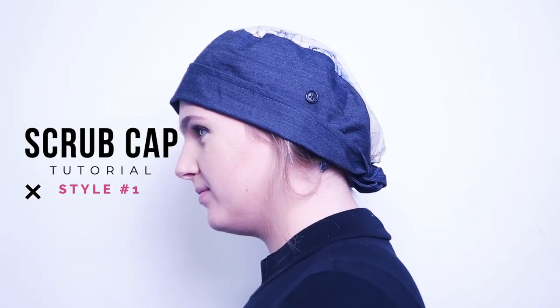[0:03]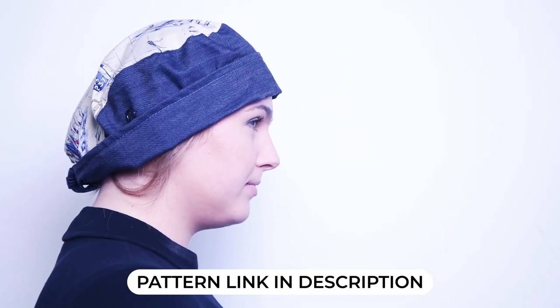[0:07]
Welcome back, everyone. Today we're going to be showing you how to make a super simple tie-back scrub cap with ear-saving buttons to loop your mask around, and the pattern is available in the description.
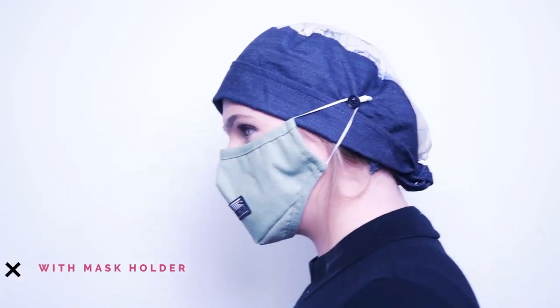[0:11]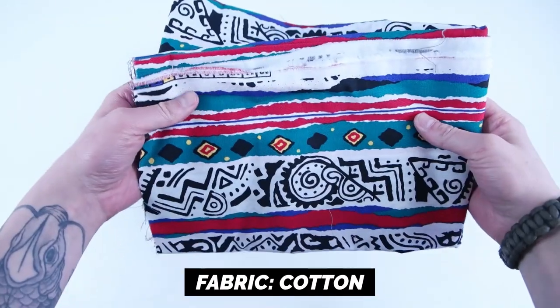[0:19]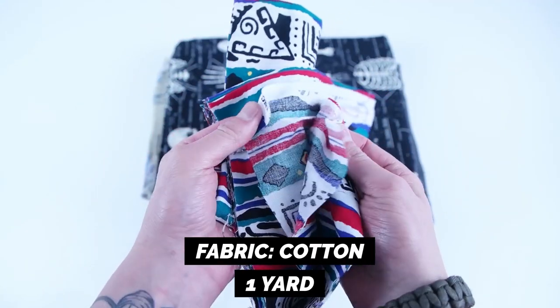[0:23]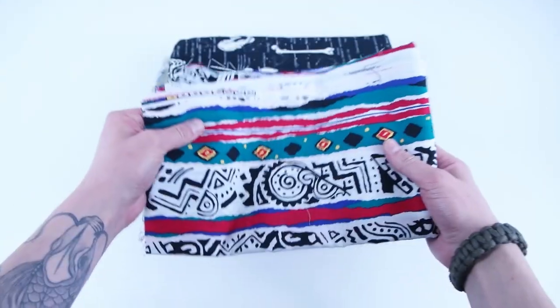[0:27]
Getting started with supplies, you want 1 yard of cotton. You can get away with less than 1 yard, but I recommend grabbing more in case you make a mistake. Cotton comes in so many different patterns. It's super durable, easy to clean, and lightweight.
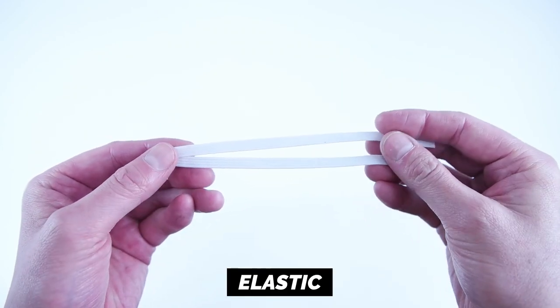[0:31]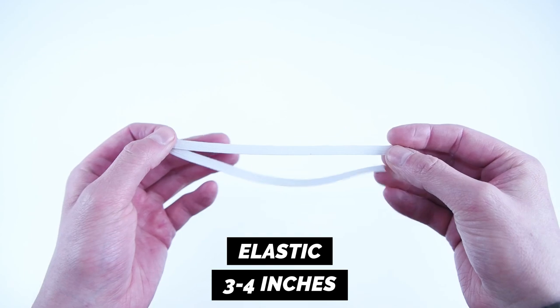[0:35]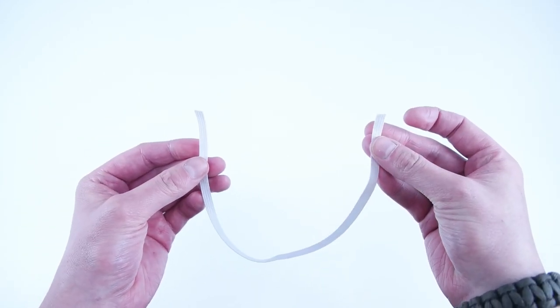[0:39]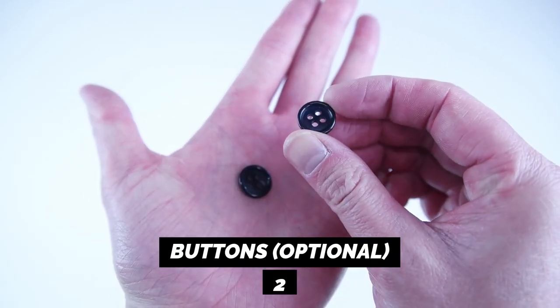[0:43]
You'll need 3 to 4 inches of elastic. I recommend using 1/4 inch elastic, but if you can't find 1/4 inch, 1/2 inch will do just fine. Then 2 buttons, and this is optional if you want to make the mask holder.
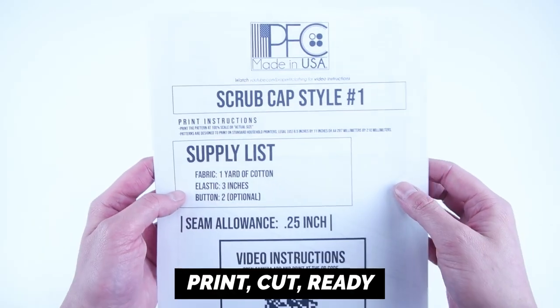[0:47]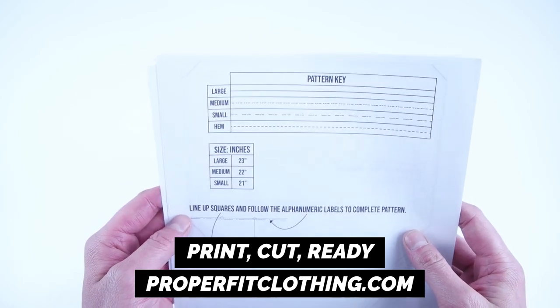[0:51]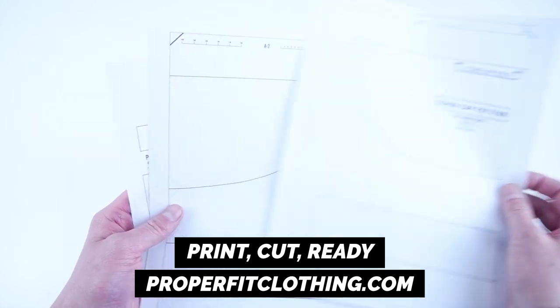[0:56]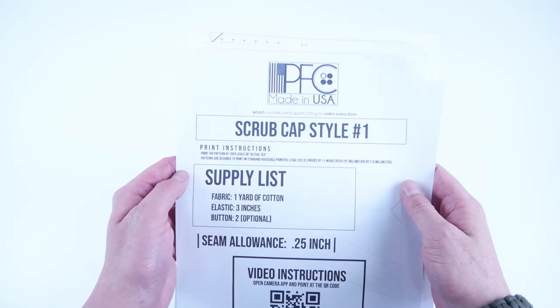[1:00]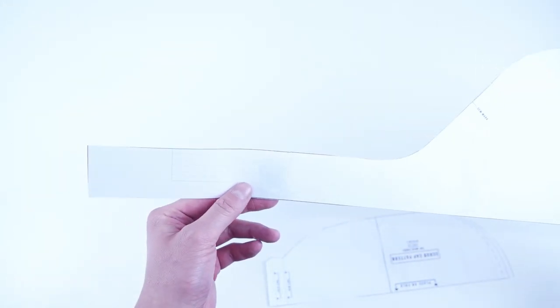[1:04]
And lastly, your pattern, and this pattern is available at properfitclothing.com. They're super easy to use. All you have to do is print it, cut it, and you're ready to go. And everything will be linked down in the description, from the supplies to the pattern. And this pattern comes in multiple sizes, so cut out the size that works best for you.
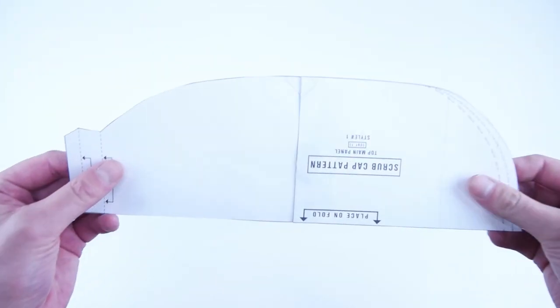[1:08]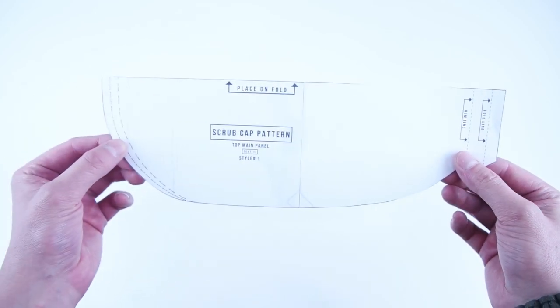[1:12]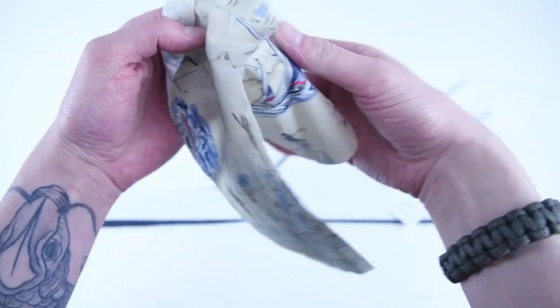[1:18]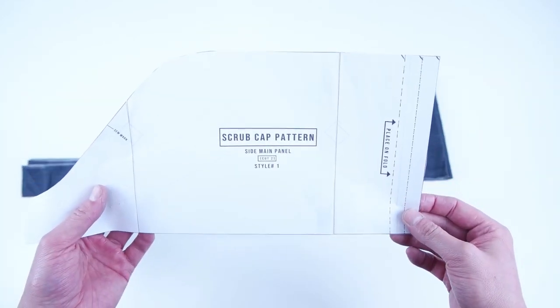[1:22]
After cutting out the pattern, you're going to want to end up with 1 top main panel, and be sure to cut this panel on the fold, and 2 side main panels. Also cut this pattern on the fold.
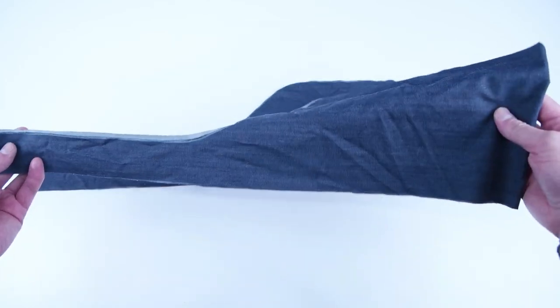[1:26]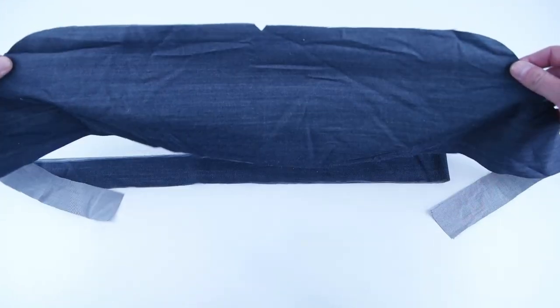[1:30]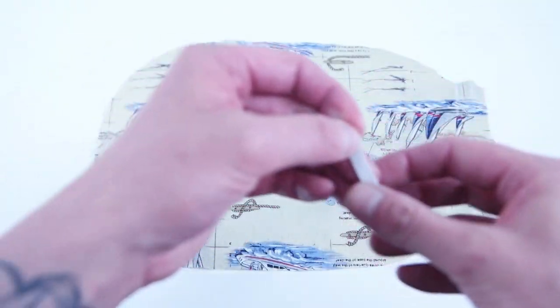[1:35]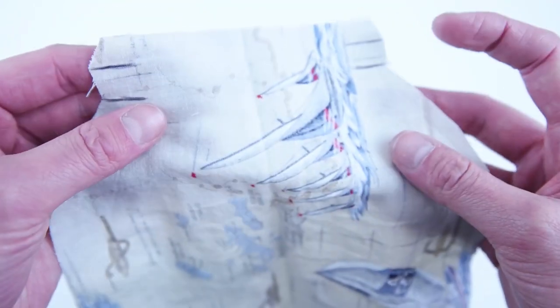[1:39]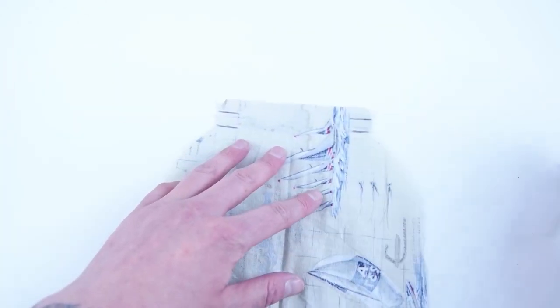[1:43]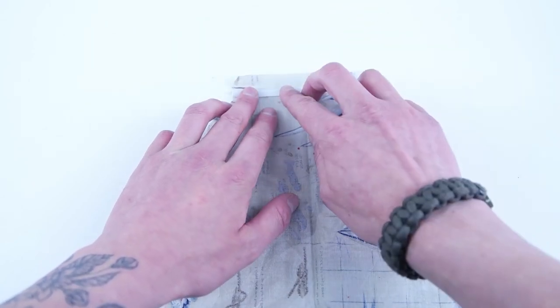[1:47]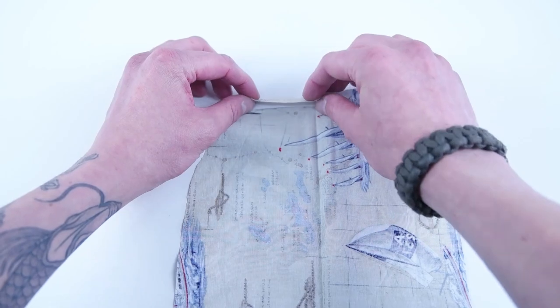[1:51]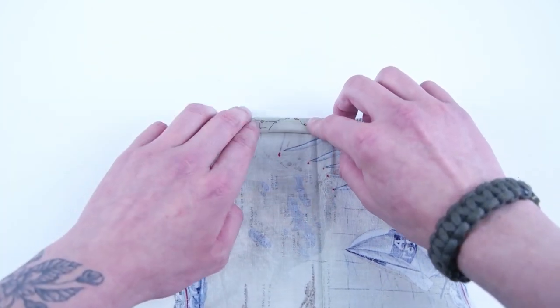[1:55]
Getting started with assembly, grab your 3 to 4 inch piece of elastic and also your top main panel. Mark your hem and fold lines on the wrong side of the top main panel. We're going to grab that piece of elastic and place it in between the fold and hem line. Make sure it's on the left or the right side, and then go ahead and roll that hem line over and the fold line, sandwiching that elastic in between the layers.
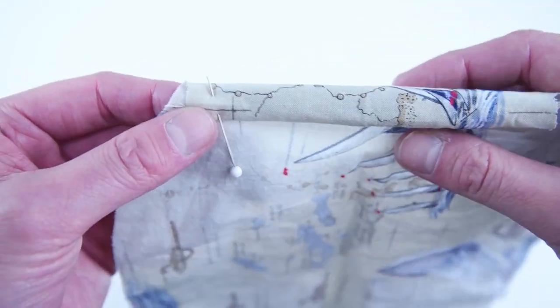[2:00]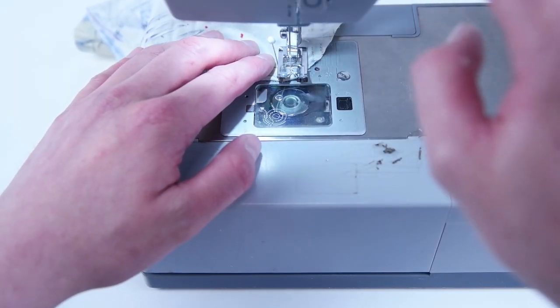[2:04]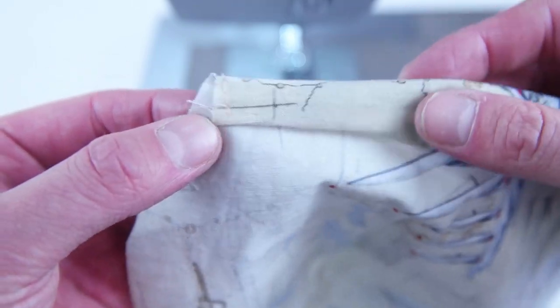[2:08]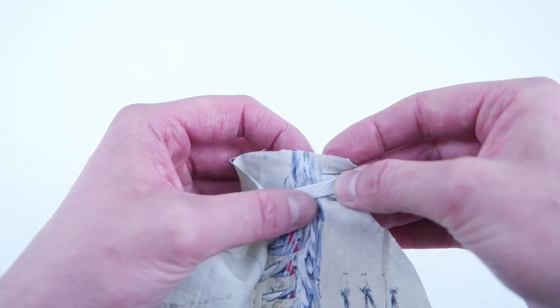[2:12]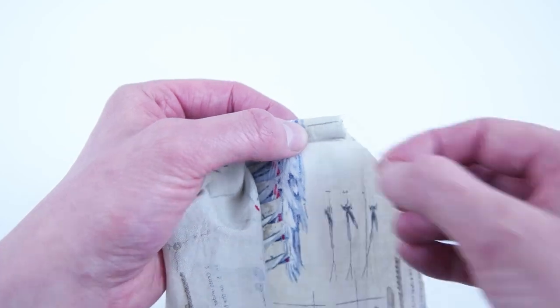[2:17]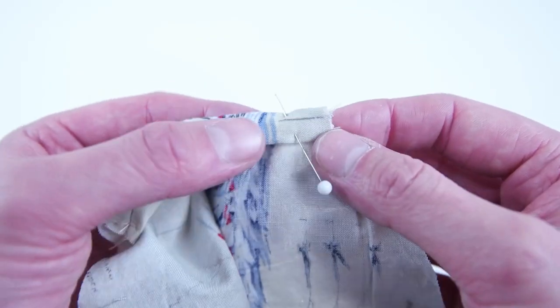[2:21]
Place a pin through the elastic and through the layers. And we're going to do a tack stitch as close as we can to the outside edge to hold all those layers together. Now we're going to pull the elastic to the opposite edge and fold the layers over the same way. And once you have them all together, go ahead and place a pin. We're going to add a tack stitch to that edge as well.
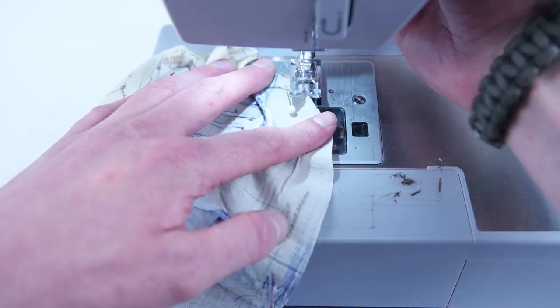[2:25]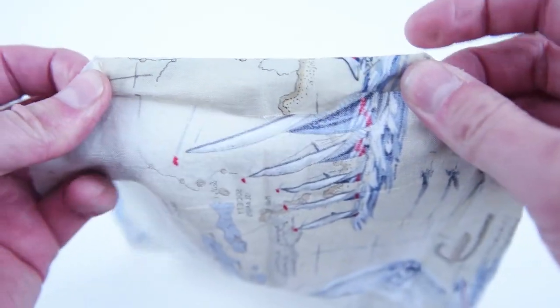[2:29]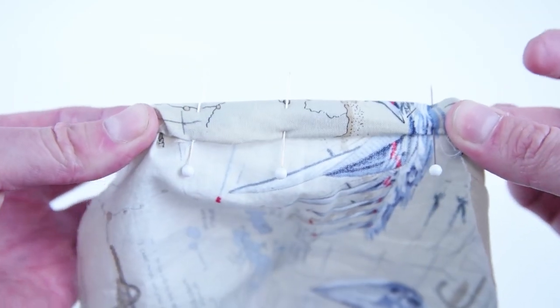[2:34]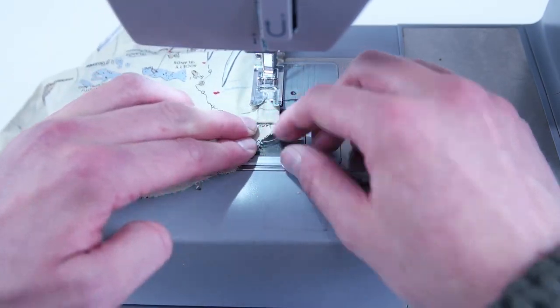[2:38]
With both of the tack stitches in place, stretch out that elastic, place some pins through all the layers, and we're going to stitch on the inside of that elastic. Just make sure you don't stitch on the elastic itself.
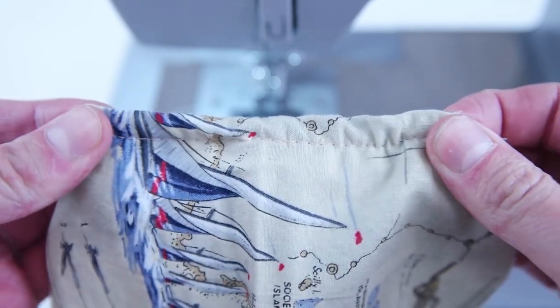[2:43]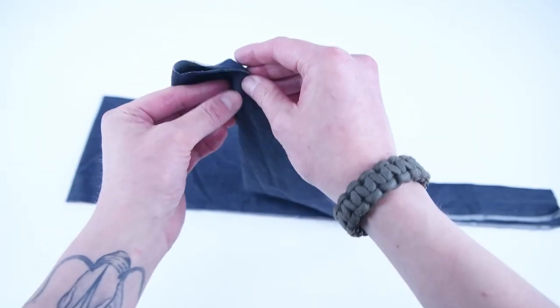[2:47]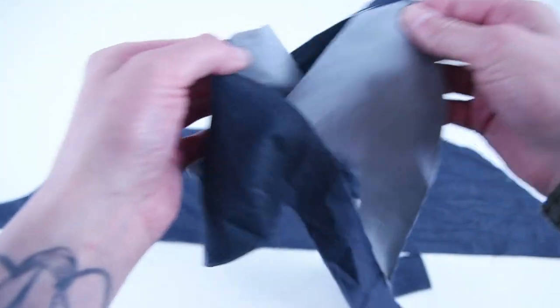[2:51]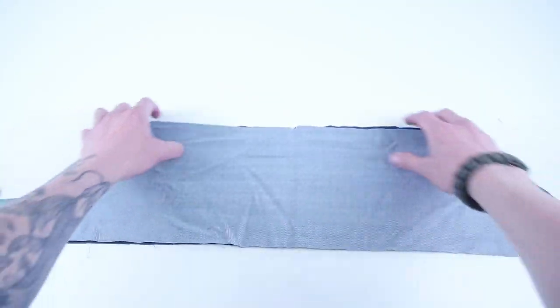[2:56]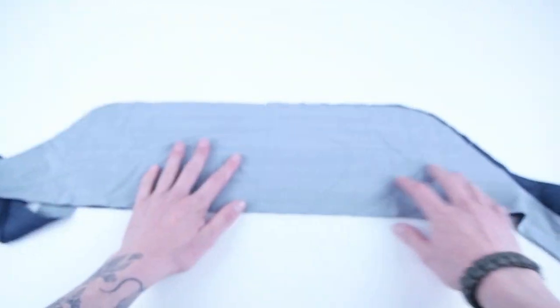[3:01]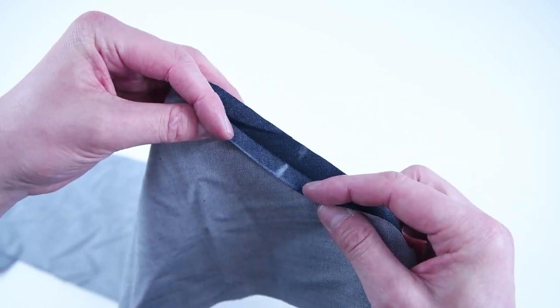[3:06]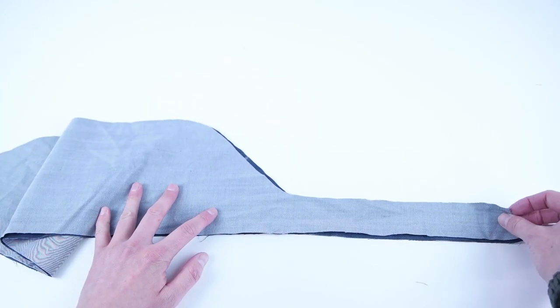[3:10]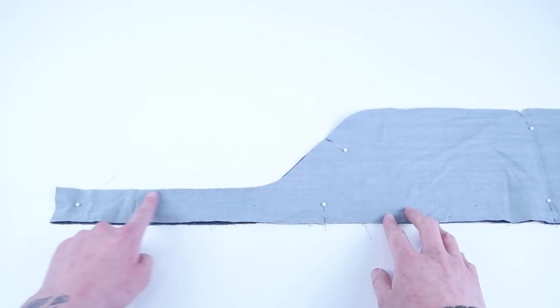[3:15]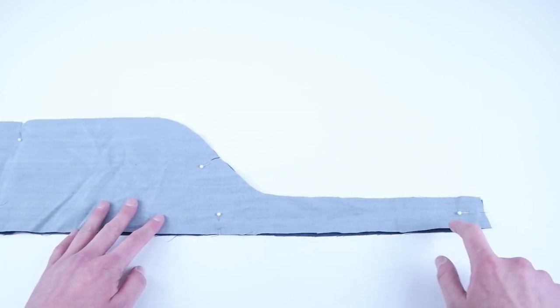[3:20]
Next, we're going to grab the 2 side main panels. We're going to place the right sides together, lining up the top notches and the side sew marks. And when you have it all lined up, go ahead and throw pins all the way around the outside edge. And we're going to sew at 1/4 inch all the way around the bottom outside edge, starting at 1 sew mark and ending at the other sew mark.
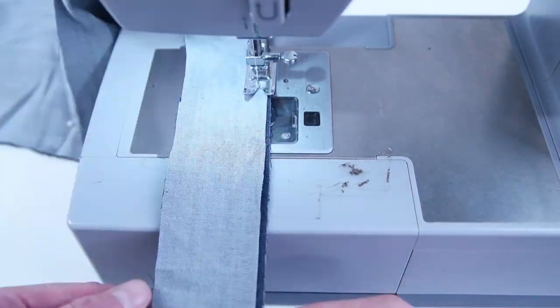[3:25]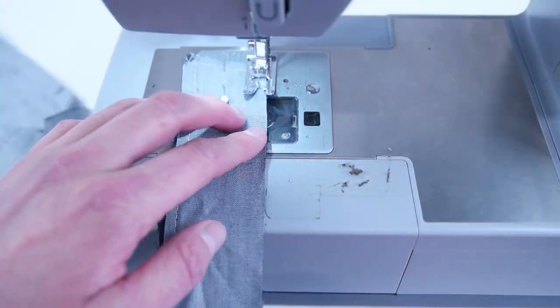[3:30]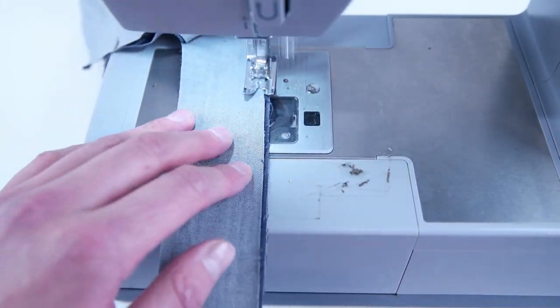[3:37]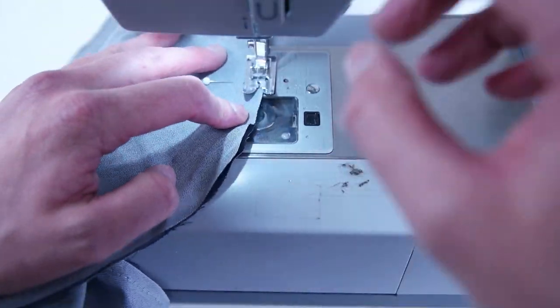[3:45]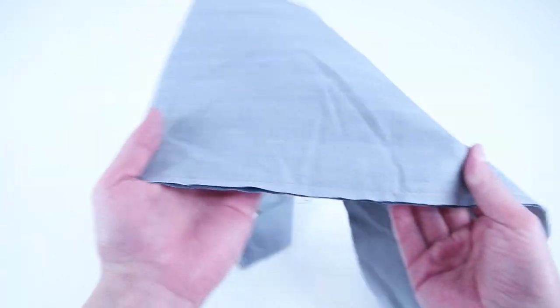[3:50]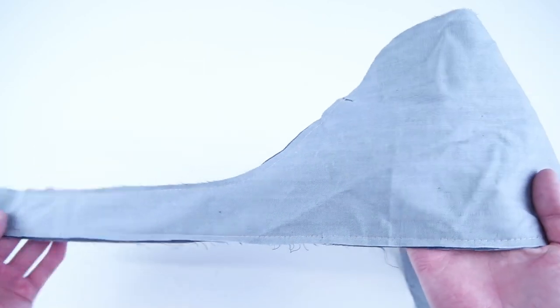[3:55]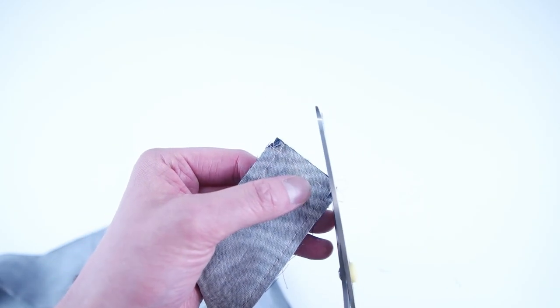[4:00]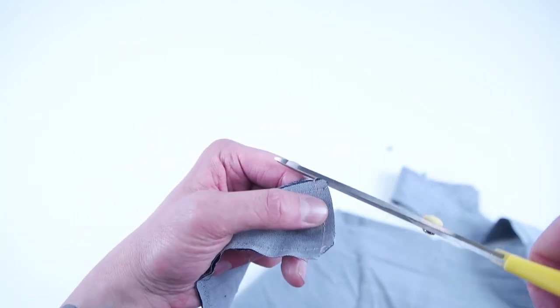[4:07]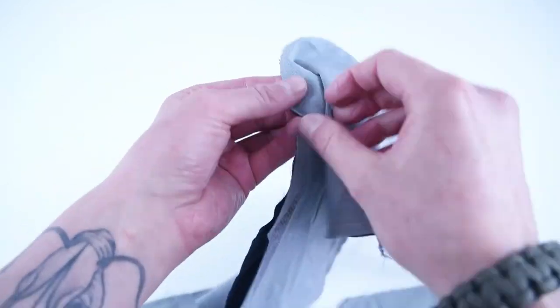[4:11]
Trim the corners on both sides to reduce the bulk. Once you have the corners trimmed, flip the right side out.
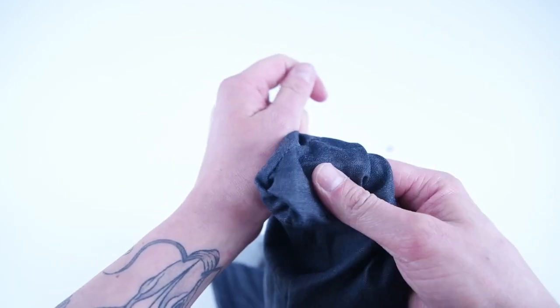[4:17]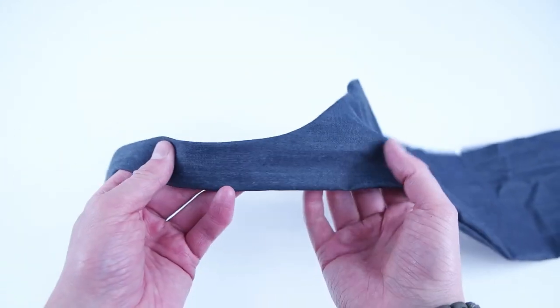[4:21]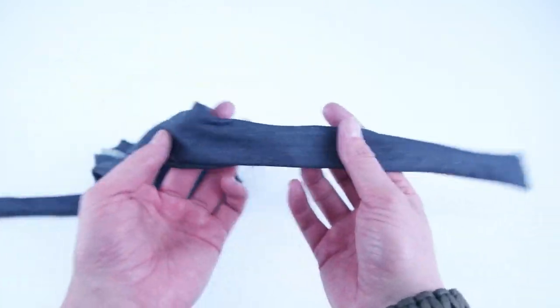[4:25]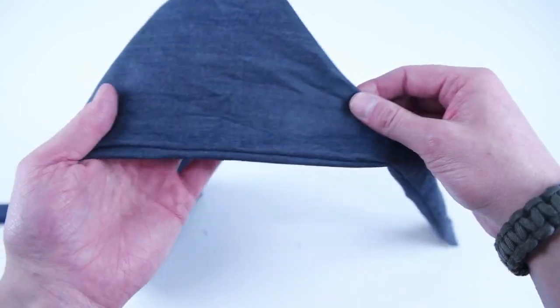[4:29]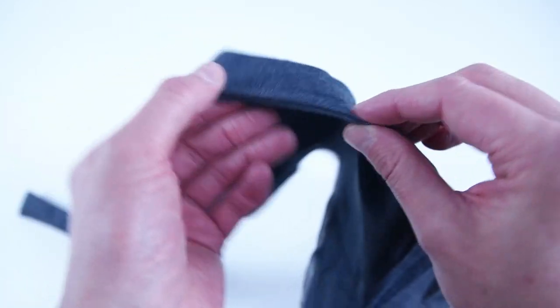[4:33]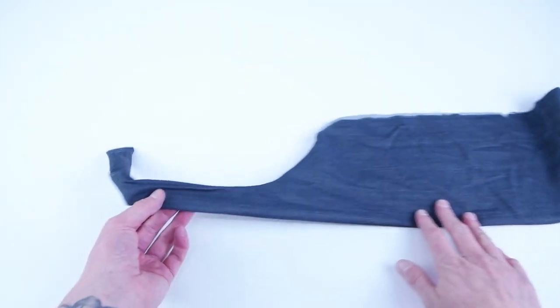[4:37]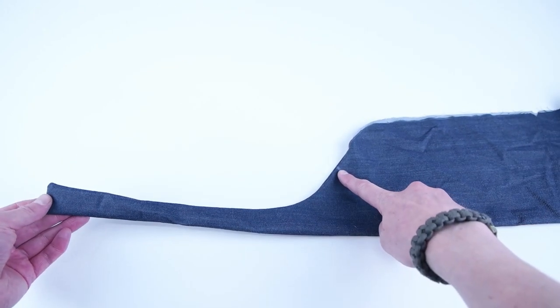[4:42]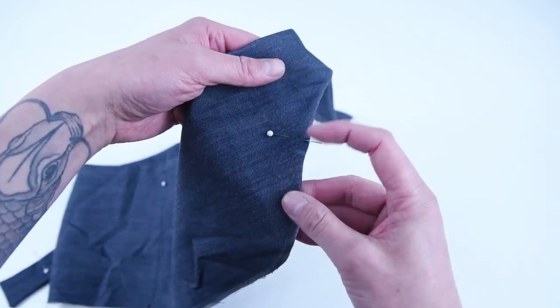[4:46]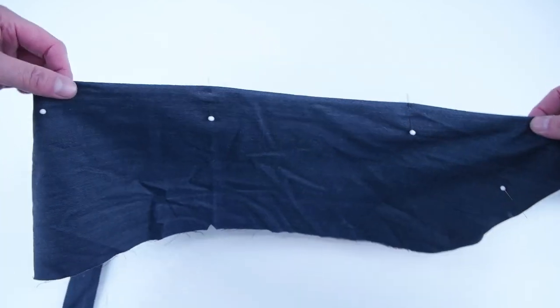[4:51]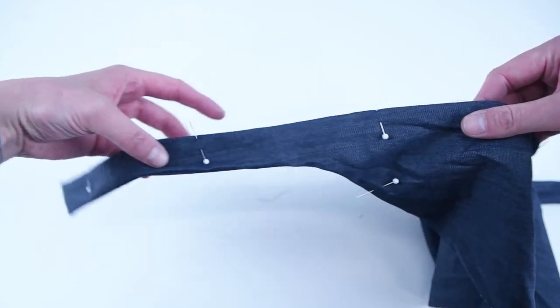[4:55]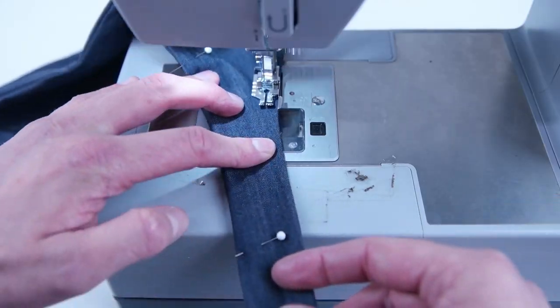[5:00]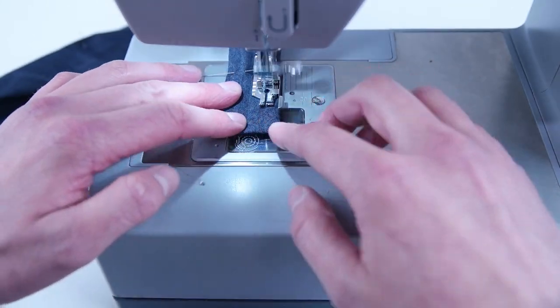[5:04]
We're going to be adding an edge stitch along the entire bottom. The best way to do this is to pin the layers together and use an edge stitch presser foot. We're going to be starting at 1 sew mark and ending at the sew mark on the opposite side. The presser foot we're using sews at about a quarter inch to the edge. I recommend sewing at a quarter inch or closer to the edge.
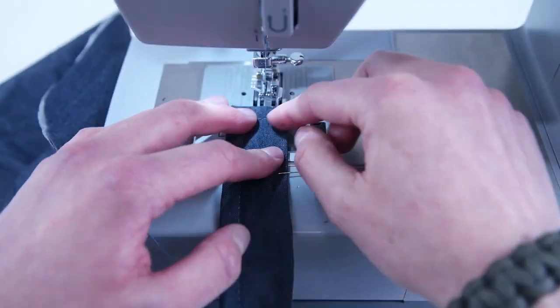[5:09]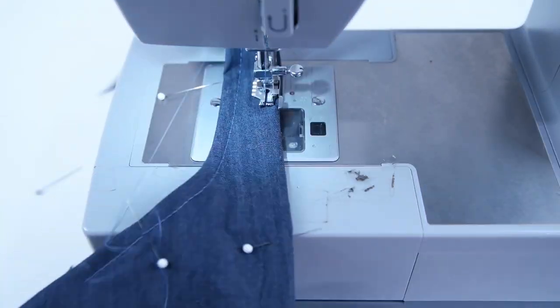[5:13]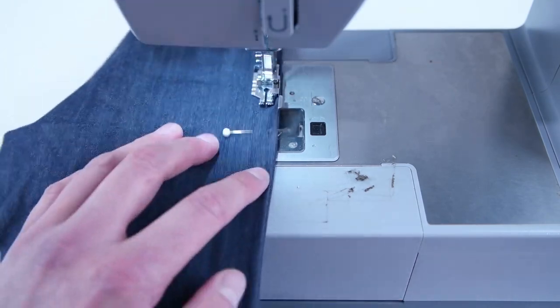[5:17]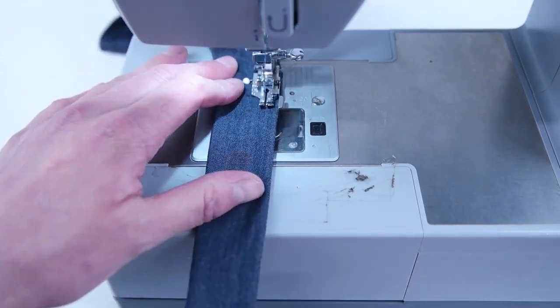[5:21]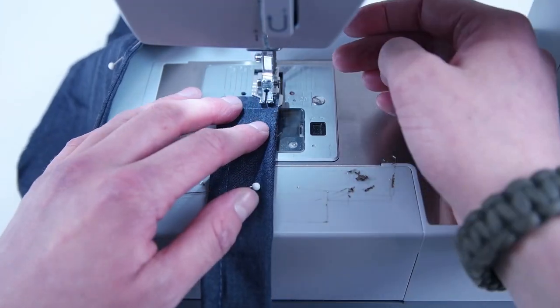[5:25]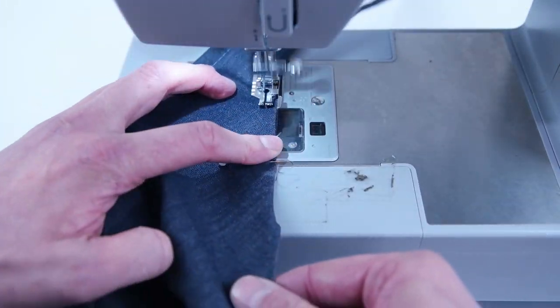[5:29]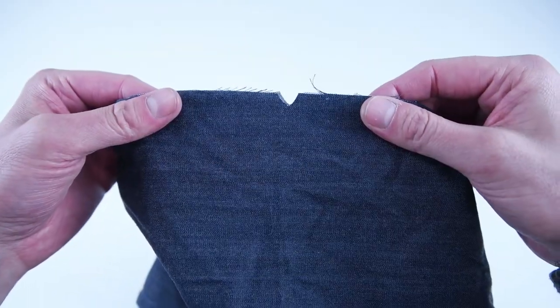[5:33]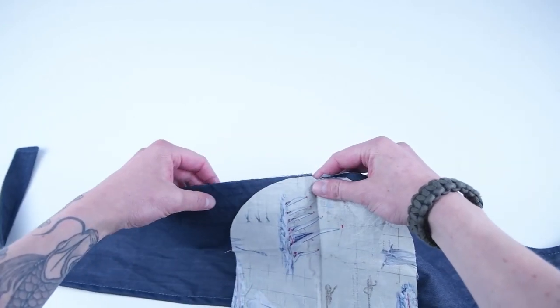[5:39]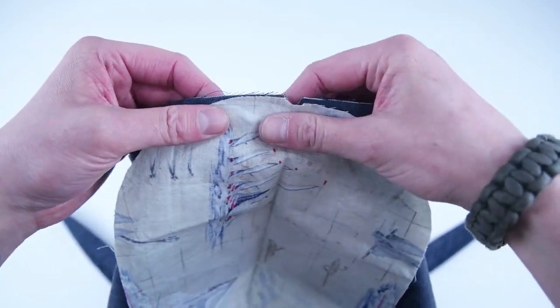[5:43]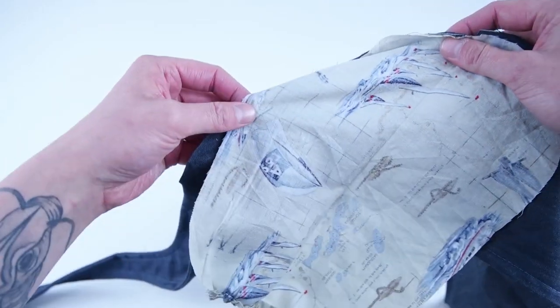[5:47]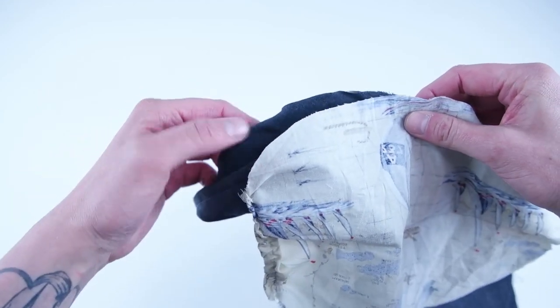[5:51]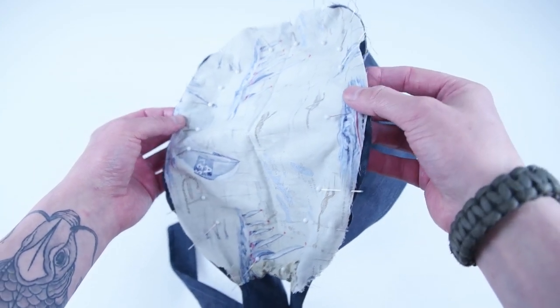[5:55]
Grab your top main panel and your side main panel, and what we're going to do is line up the notches and pin all the way around the outside edge. And the easiest way to do this is start from the middle notch and pin towards the left side, and then pin back towards the right side. And keep in mind, the top panel should go past the side sew marks on the side main panel.
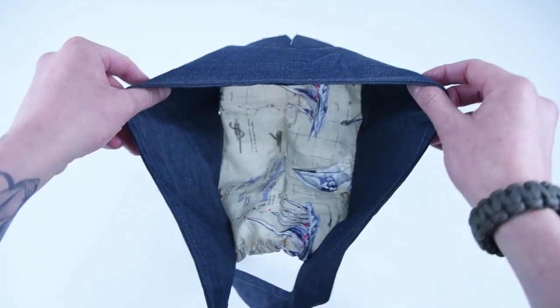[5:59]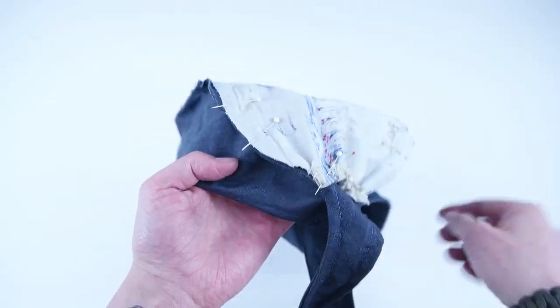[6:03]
And once you have it all pinned down, we're going to sew at a quarter inch seam allowance around the outside edge.
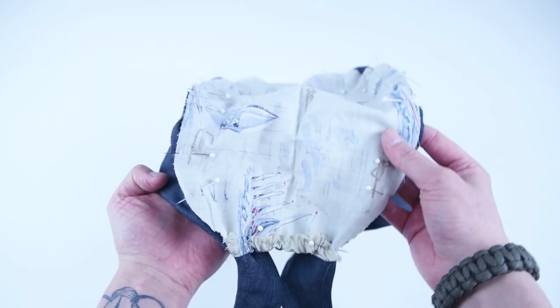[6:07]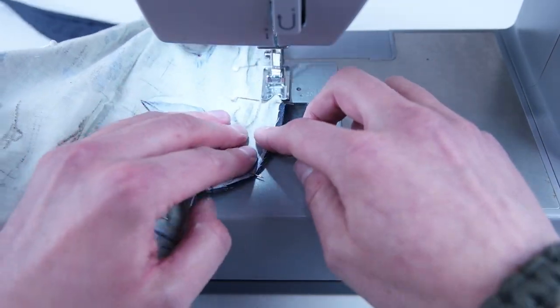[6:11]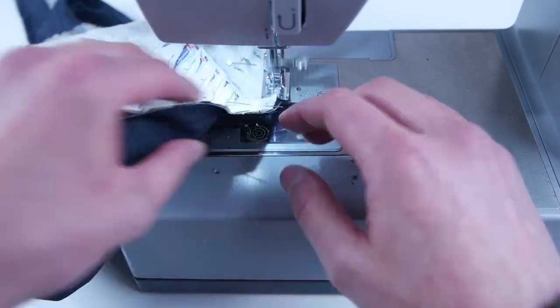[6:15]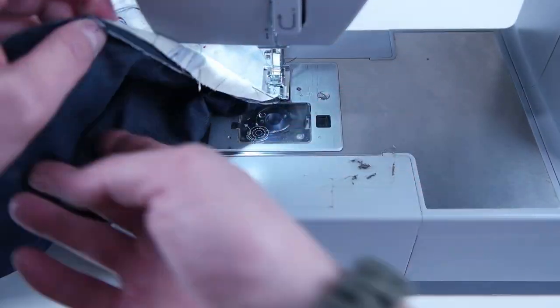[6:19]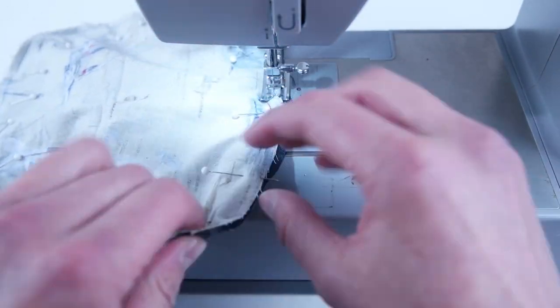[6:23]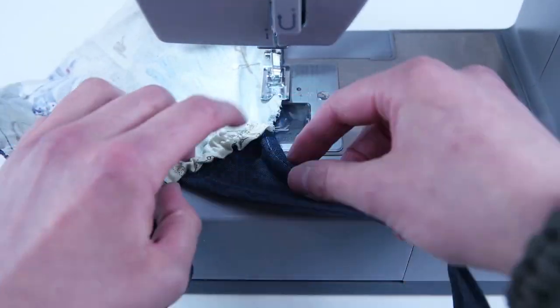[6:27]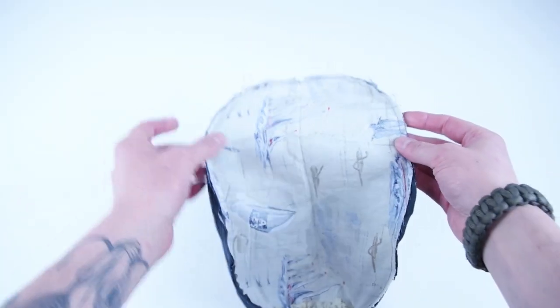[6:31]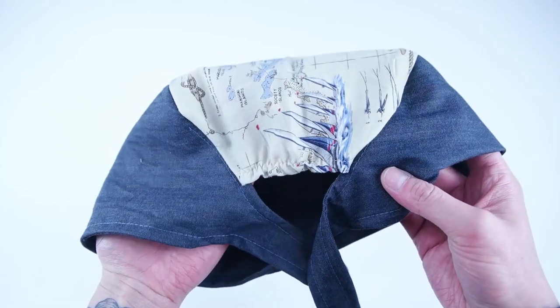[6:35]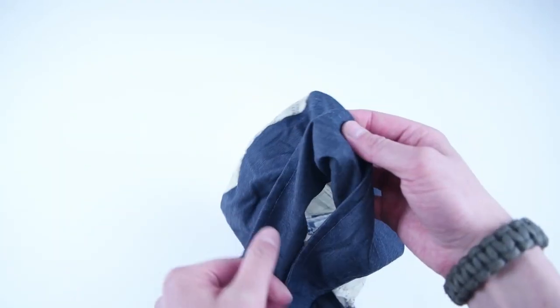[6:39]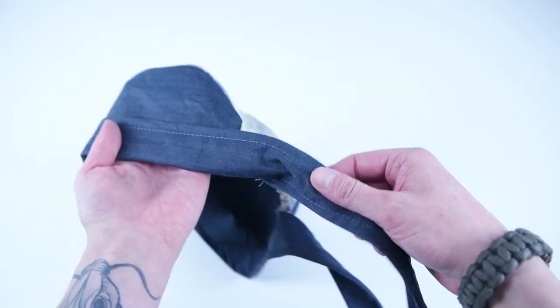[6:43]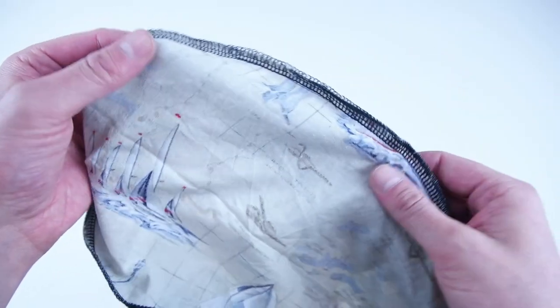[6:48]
You can snip notches around the curve to reduce the bulk. At this point, I like to flip it right side out and check all the edges, make sure all the layers got sewn together. And another technique, if you have a serger, you can serge this inside edge to reduce the fraying.
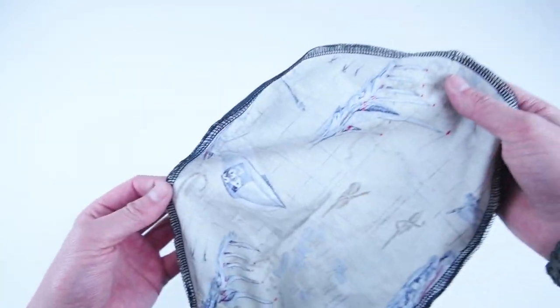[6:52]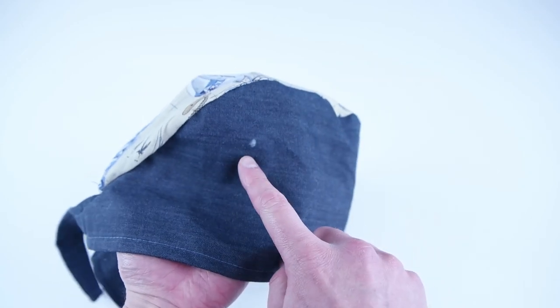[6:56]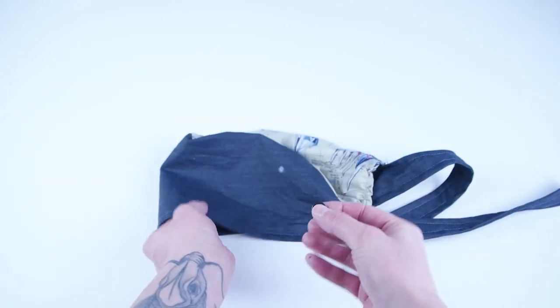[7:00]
And the last step is adding the buttons, and this is going to be different for everyone. I recommend putting the cap on and feeling where your ears are and then making your marks. Once you have your marks made, you can hand sew your buttons on.
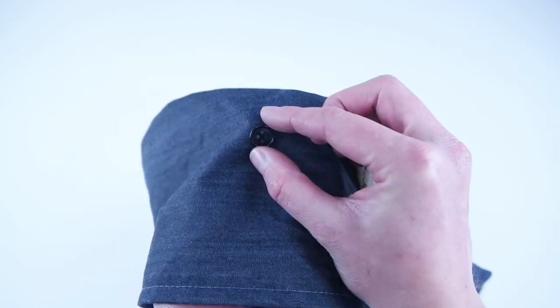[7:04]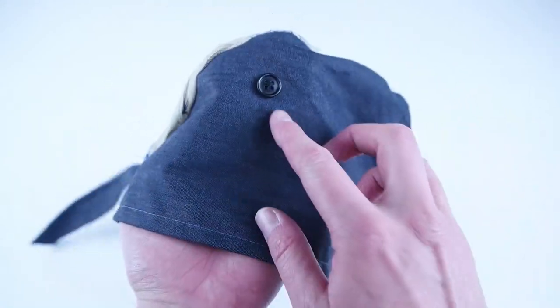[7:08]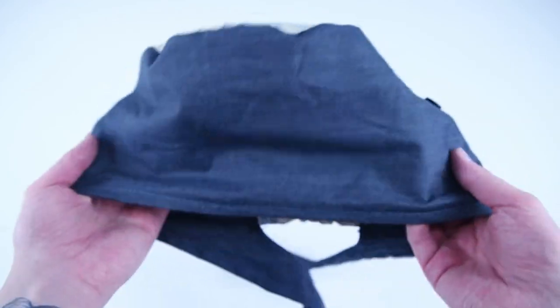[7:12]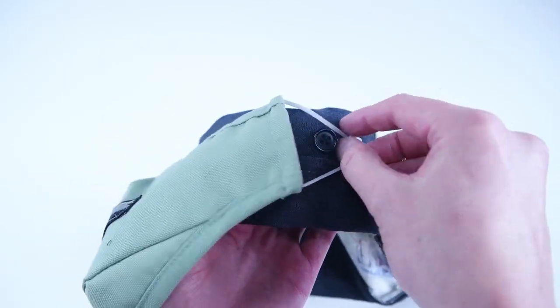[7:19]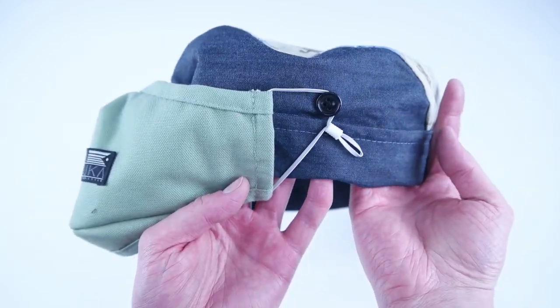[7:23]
And I definitely recommend adding the buttons. They save your ears a tremendous amount of stress from that elastic constantly pulling. But other than that, that completes the Style 1 scrub cap.